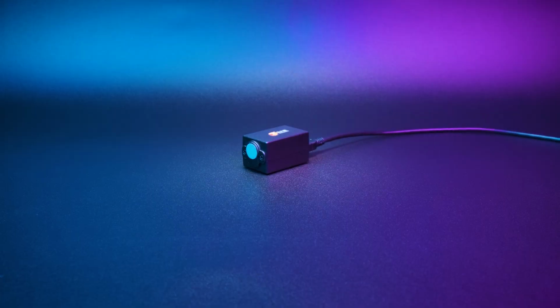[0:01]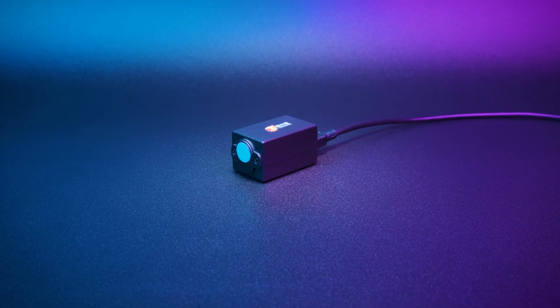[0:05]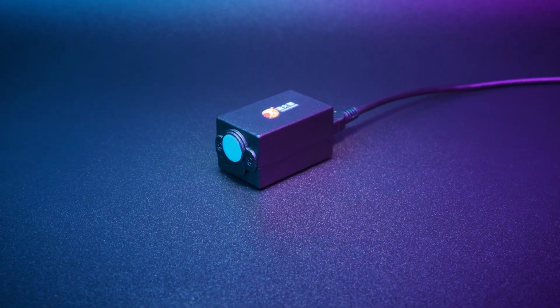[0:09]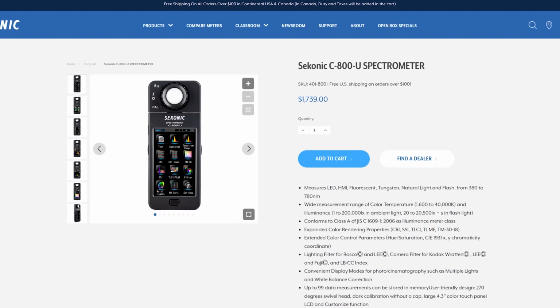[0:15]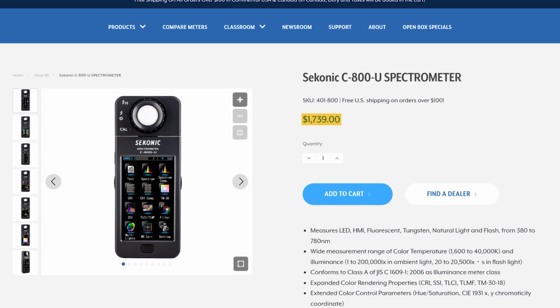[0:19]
Light quality is something we don't often think about, but if you're into lighting design, photography, or setting up an illegal grow room in your basement, then having a spectrometer to accurately measure light can make a huge difference. The only problem is that most spectrometers designed for these tasks cost well over $1,000.
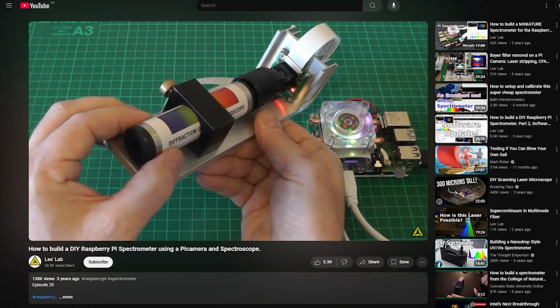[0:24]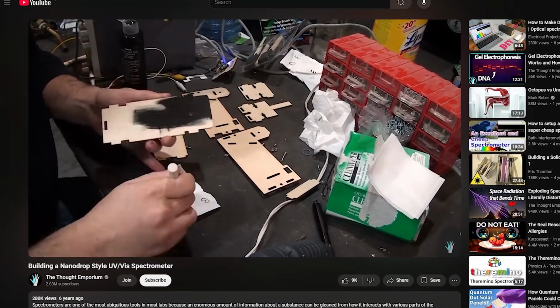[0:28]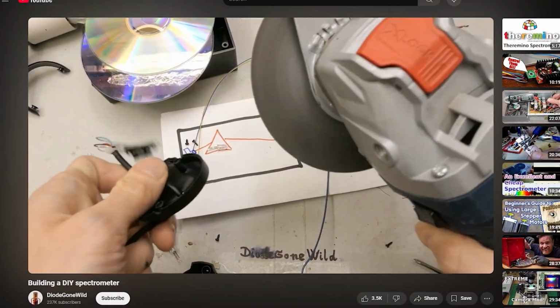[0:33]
Building a webcam-based spectrometer seems like an obvious alternative. They're affordable and can have a resolution of just a few nanometers. But they've got one major drawback that makes them almost useless for my application. They don't provide data in absolute units.
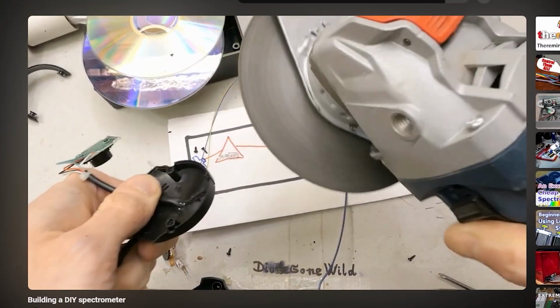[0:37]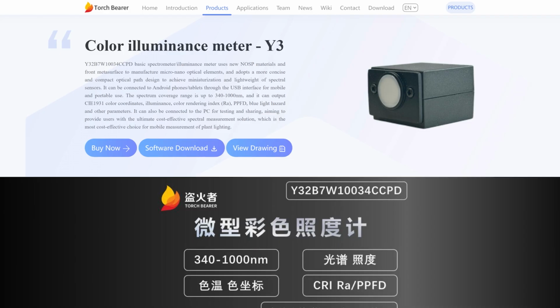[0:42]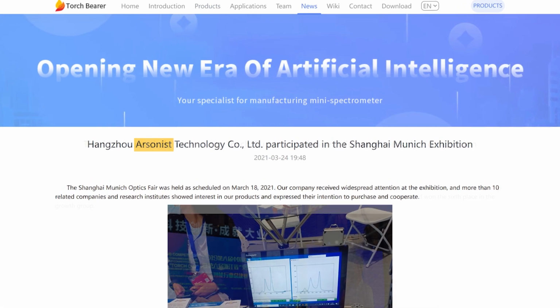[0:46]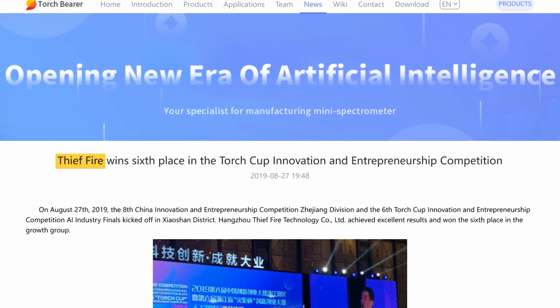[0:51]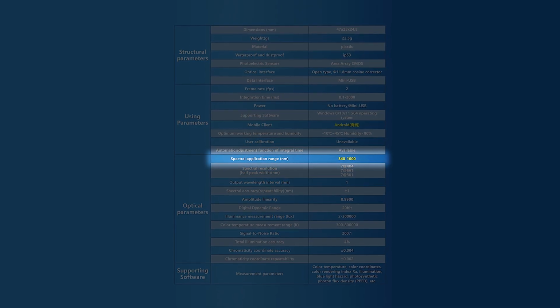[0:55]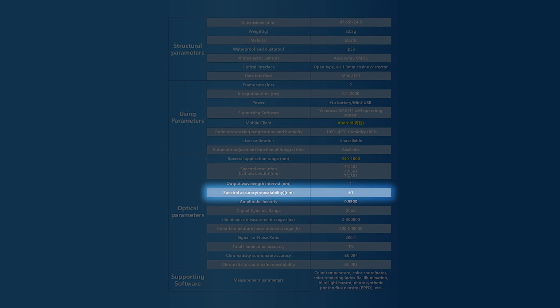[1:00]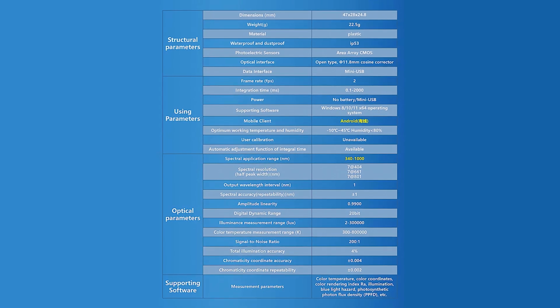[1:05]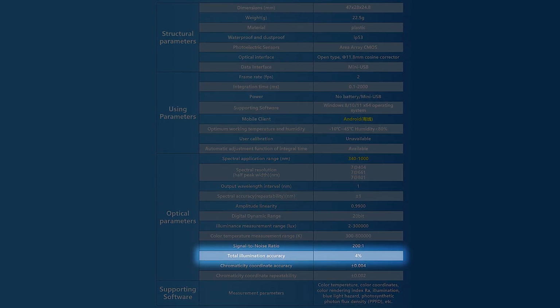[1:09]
That's when I came across a USB spectrometer from a relatively unknown Chinese manufacturer called Torchbearer. Or is it Arsonist? Or maybe Fire Stealer? Their website can't seem to decide. Priced at under $150, it claims a measurement range of 340 to 1000 nanometers, a resolution of 7 nanometers, and an accuracy of 1 nanometer. But most importantly for me, it returns data in absolute units, with an advertised illumination accuracy of just 4%.
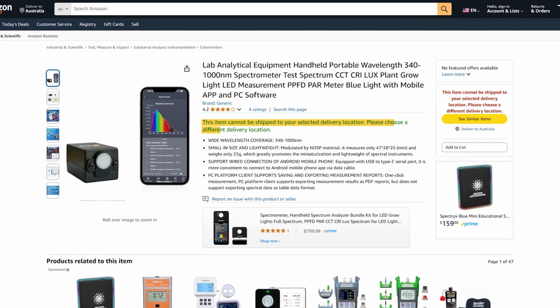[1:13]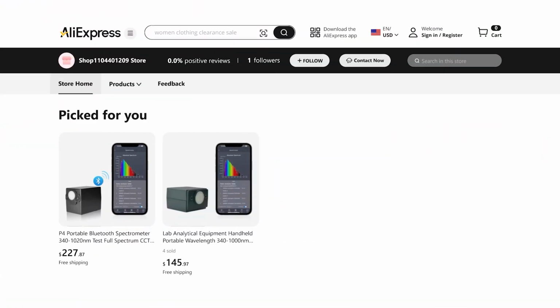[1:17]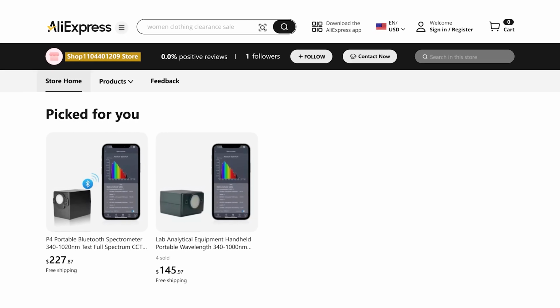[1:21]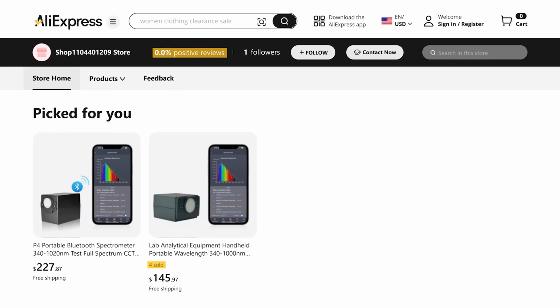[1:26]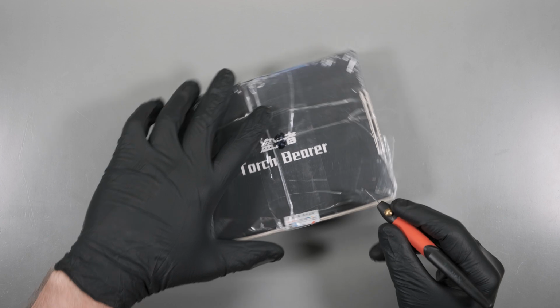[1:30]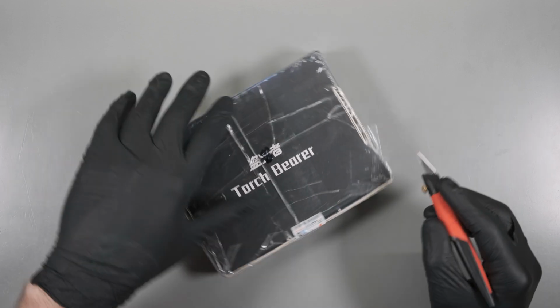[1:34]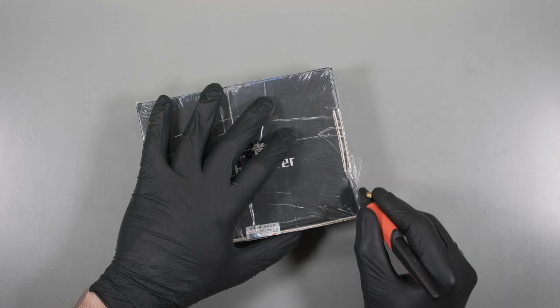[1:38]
It's available on Amazon, but unfortunately, they don't ship to Australia. So I took a chance and ordered from AliExpress, where their store name looks like it was inspired by their Wi-Fi password. With a total of 4 sales and 0% positive feedback, what could possibly go wrong? The seller took almost a week to ship my order, but to my surprise, it arrived via UPS, an unexpected luxury considering AliExpress typically relies on continental drift as their delivery method.
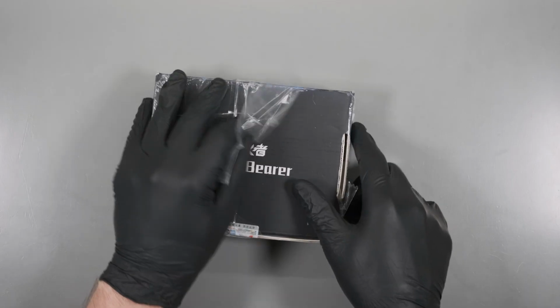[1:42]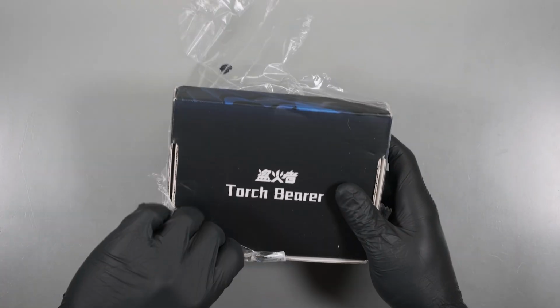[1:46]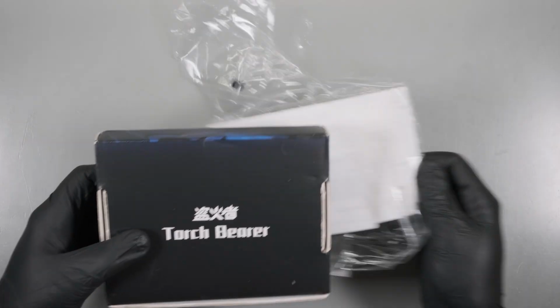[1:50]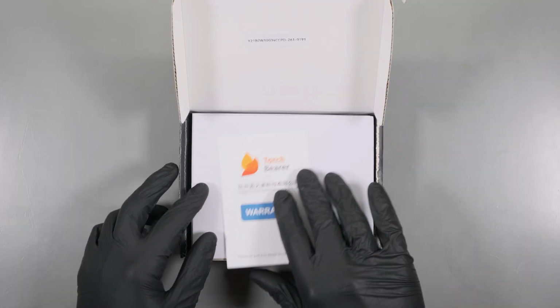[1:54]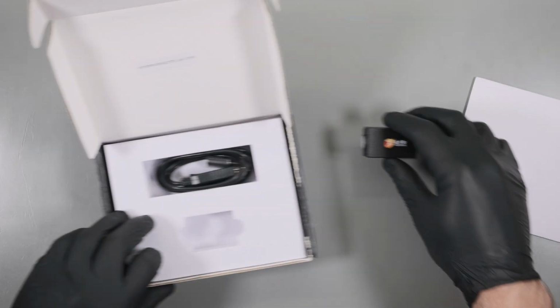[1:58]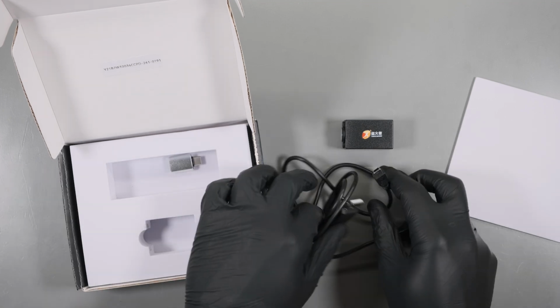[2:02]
The packaging was minimal to say the least, with just a thin layer of shrink wrap surrounding the product box. By some miracle, it arrived without too much damage. Inside the box was a warranty card, the spectrometer itself, a mini USB cable with a suspiciously large connector, and a USB Type-C to A adapter.
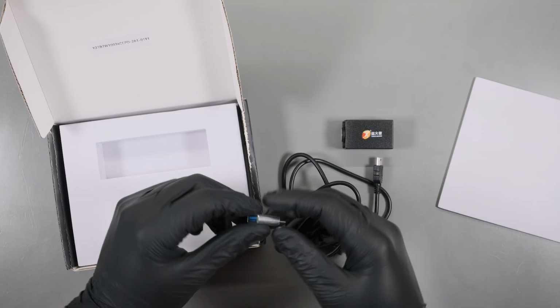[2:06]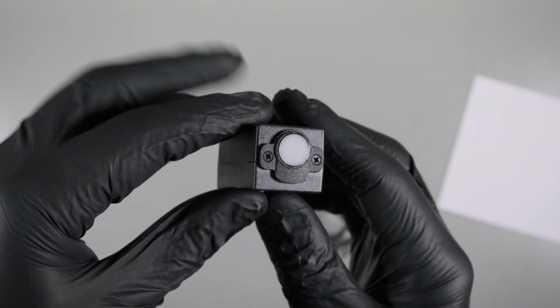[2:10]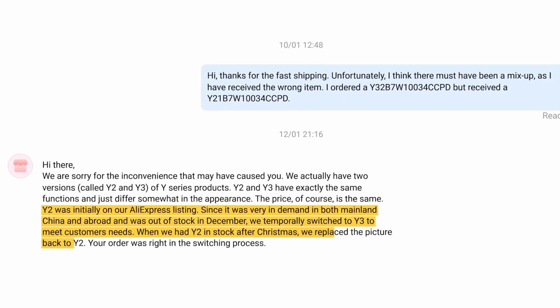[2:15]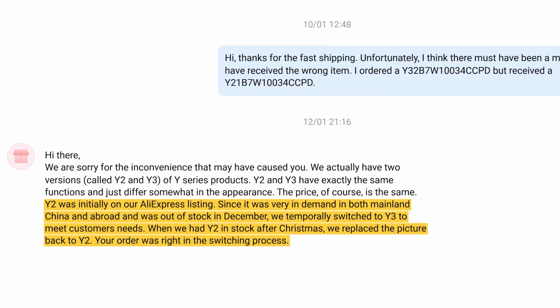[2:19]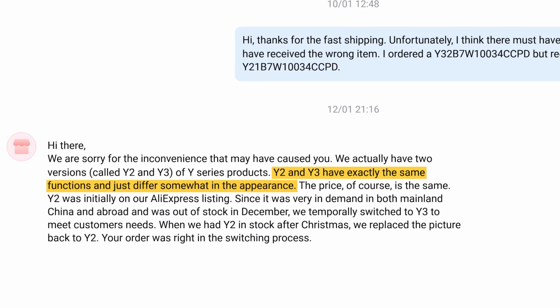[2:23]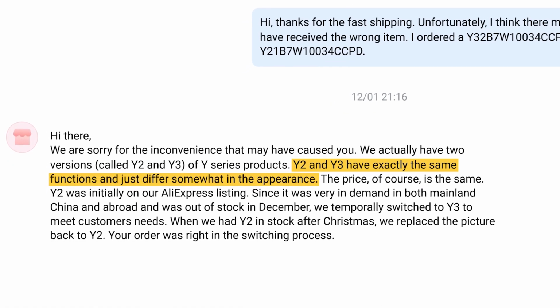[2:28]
There was just one problem. This wasn't the model I ordered. When I reached out to the seller, they explained they'd temporarily stocked another model due to high demand over the holiday season, then stopped responding to my messages. As far as I can tell, the only difference between this and the model I ordered is the size and weight, and both should have identical features.
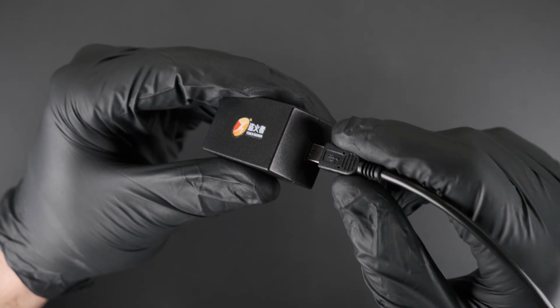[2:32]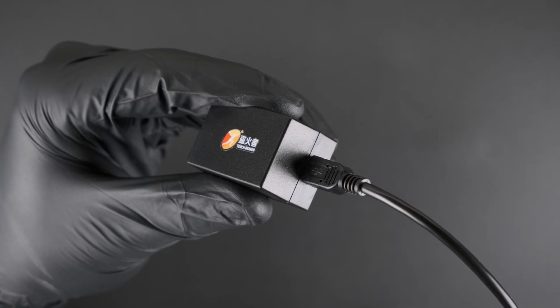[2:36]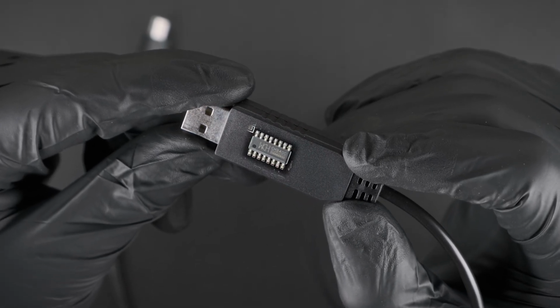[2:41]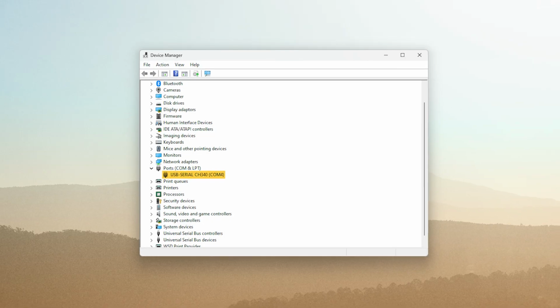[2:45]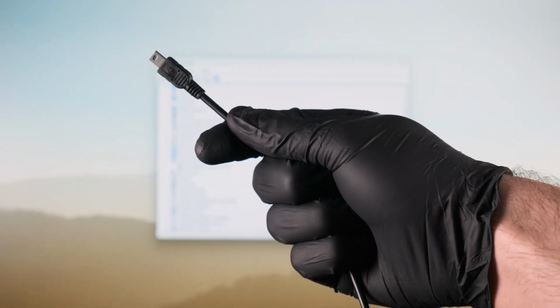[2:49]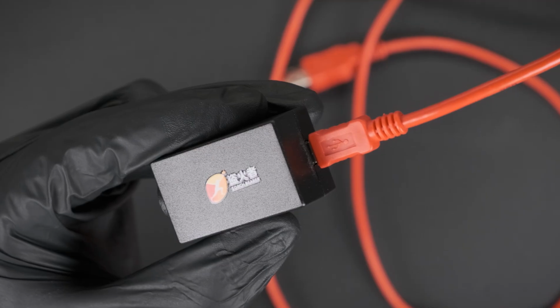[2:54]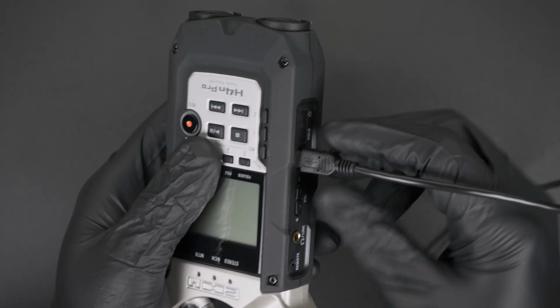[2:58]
The spectrometer is extremely compact and features a mini USB port for communication. Strangely, it doesn't use the USB protocol. Instead, the included cable contains a built-in CH340 USB to serial converter. Plugging the cable into a computer enumerates as a serial port, even without the other end being connected to anything. This means that other cables won't work and could potentially damage the spectrometer. Likewise, the included cable shouldn't be used for any other devices.
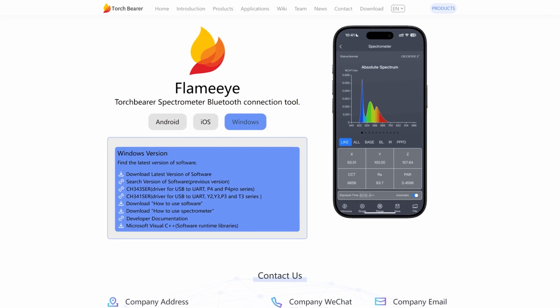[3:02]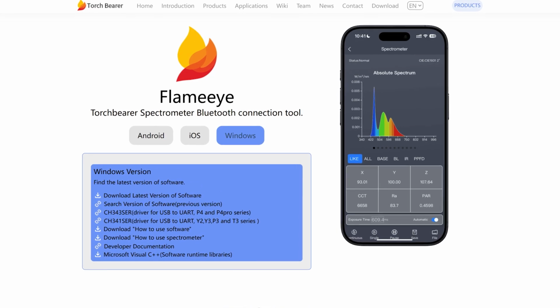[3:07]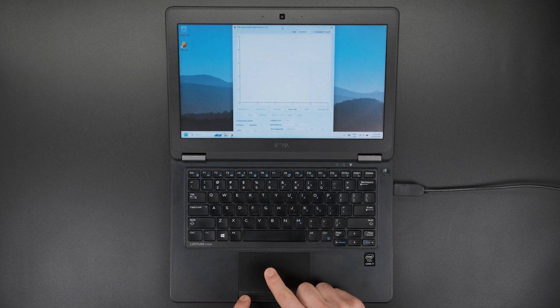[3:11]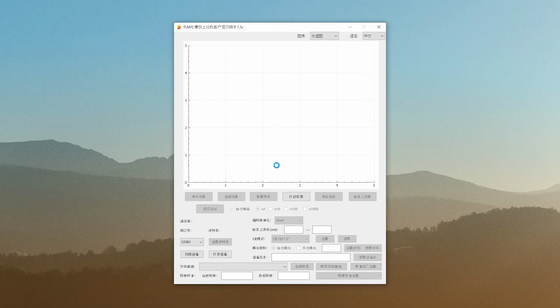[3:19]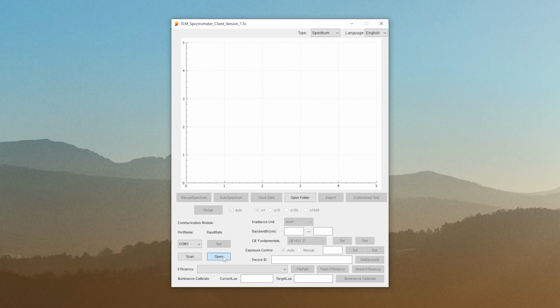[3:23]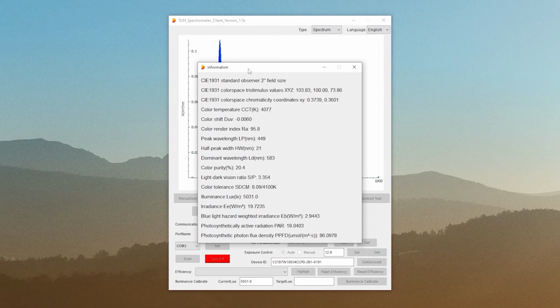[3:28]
The Windows-based software is available on Torchbearer's website, but it comes with some significant limitations. For starters, the window size is fixed, making it completely unusable on devices with small screens. You know, the sort of device that you might want to use a mini spectrometer with. It insists on starting in Chinese, but at least it's easy to switch languages. There isn't a lot of functionality either. Only a basic spectrum view and a handful of parameters are visible.
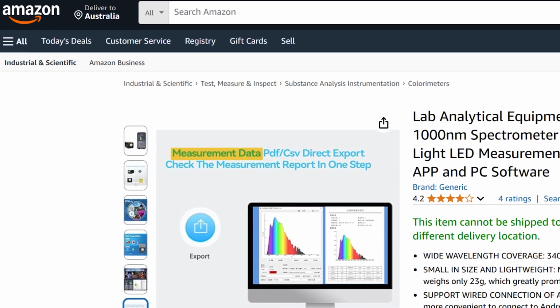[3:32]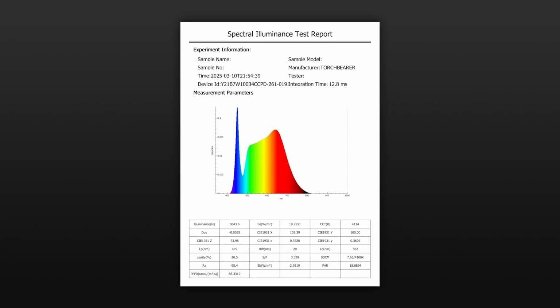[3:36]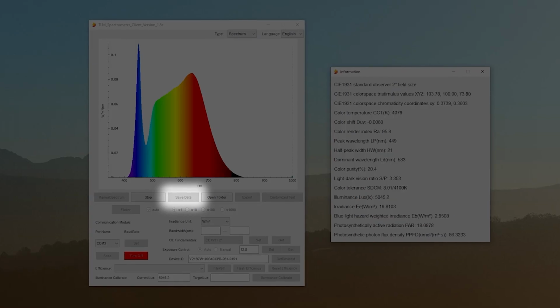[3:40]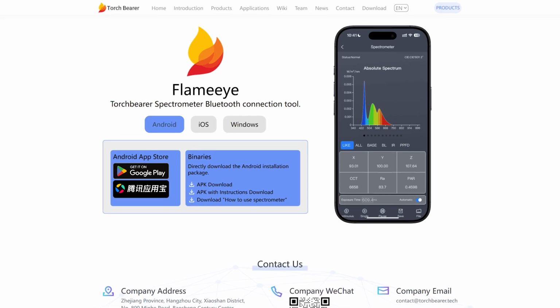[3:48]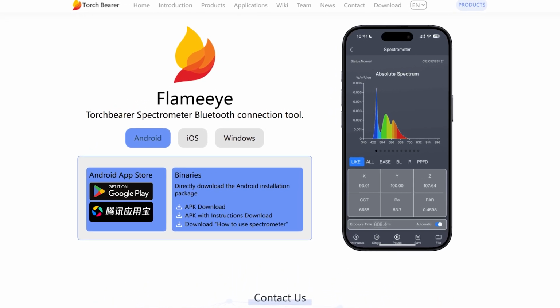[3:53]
Despite advertising CSV exporting on their store page, the only available export format is PDF. Frustratingly, CSV export, along with many other features, do exist within the software, but are disabled for their lower cost spectrometers. The Android app, available on Torchbearer's website and the Google Play Store, suffers from the same limitations.
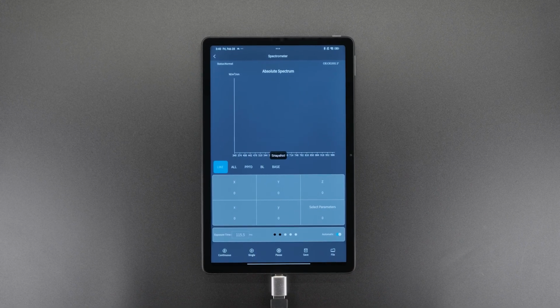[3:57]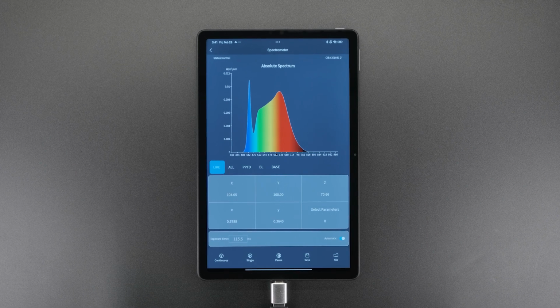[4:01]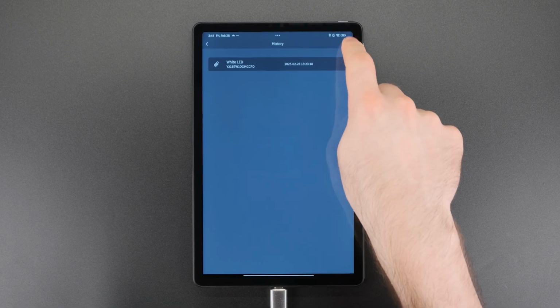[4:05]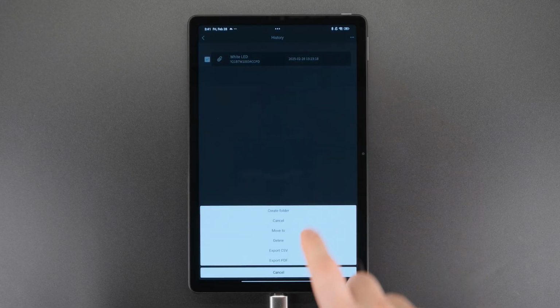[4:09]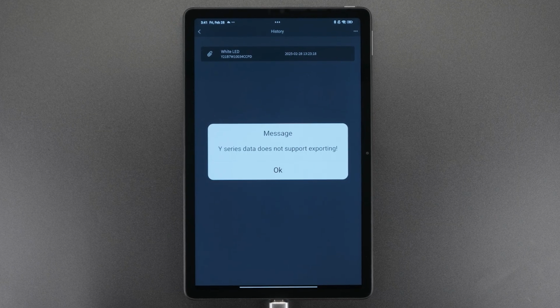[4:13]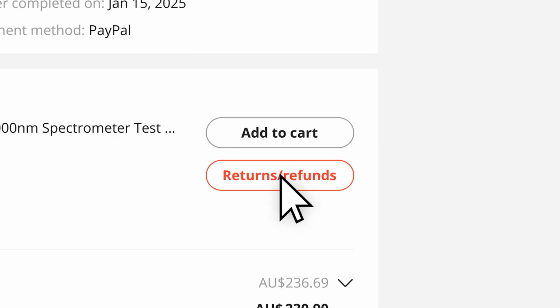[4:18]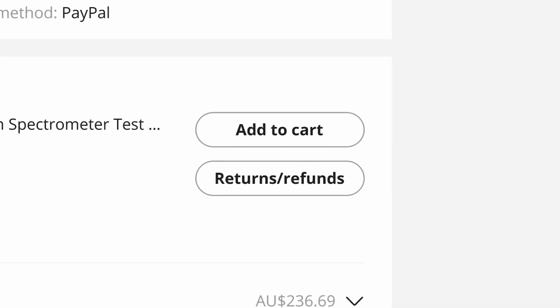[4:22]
Most of the features shown in the marketing images are missing, and like the PC software, the only available visualizations are the spectral distribution and CIE 1931 diagram. Data export is even more limited. This time, not even PDFs can be saved, and attempting to export data results in an error message. I thought about returning it, but where's the fun in that? Instead, let's have a poke around and see if we can unlock some extra functionality.
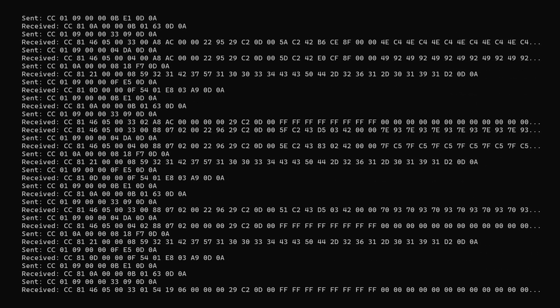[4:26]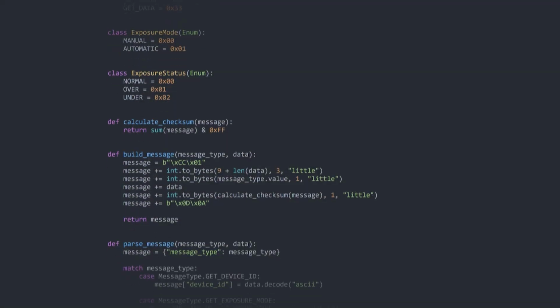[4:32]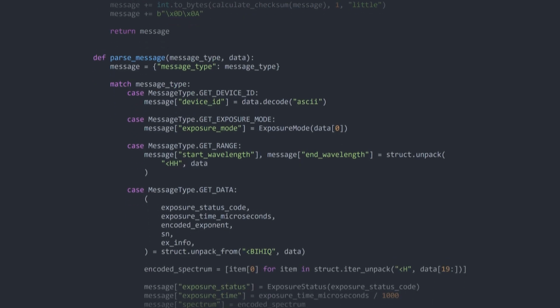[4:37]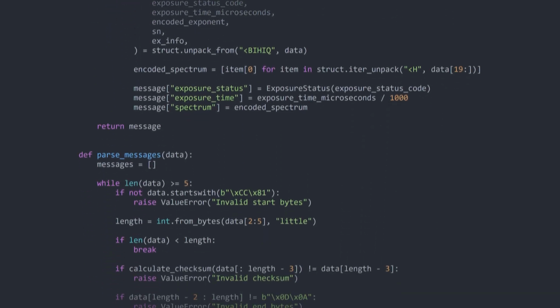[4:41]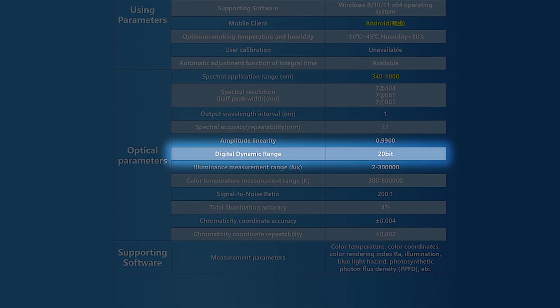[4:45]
The serial protocol seemed like a good place to start. Thankfully, Torchbearer provides protocol documentation for some of their other models. While my model had several differences, it was close enough to put together a simple Python library and extract some data. The data samples are limited to 16 bits, despite the advertised 20-bit dynamic range. Maybe Chinese bits are just more efficient.
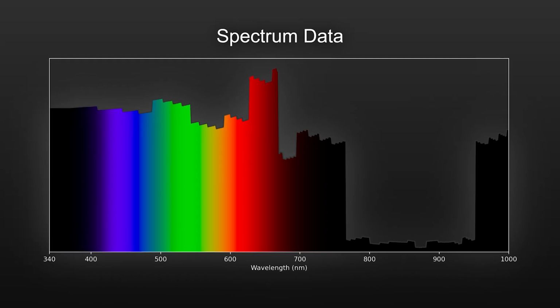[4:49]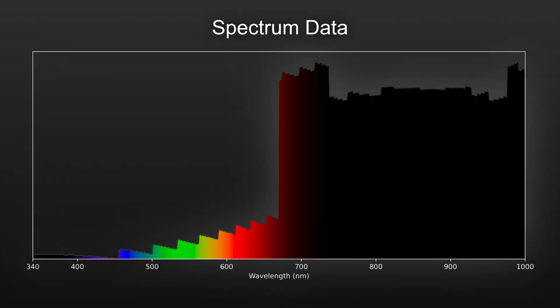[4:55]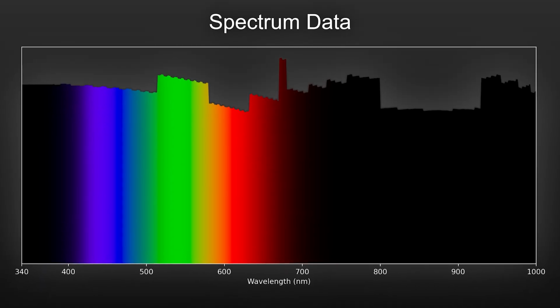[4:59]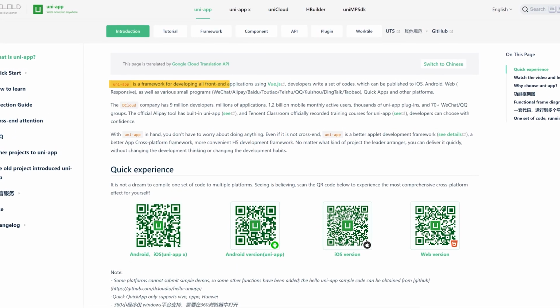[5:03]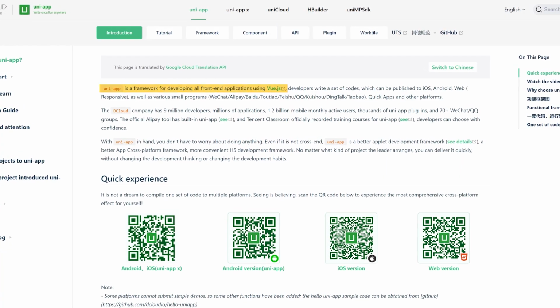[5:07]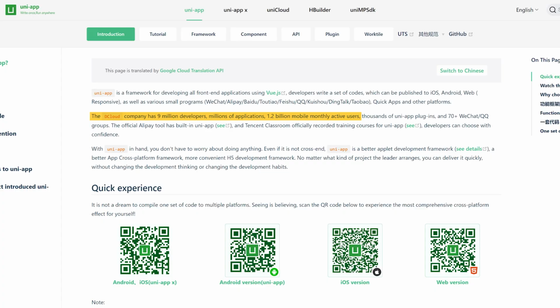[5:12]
Unfortunately, the bad news doesn't stop there, as the spectrum data appears to be encrypted. With no clear way to decrypt the data, the Android app seemed like the next logical place to investigate. The app is built with the Uni-App framework, which allows cross-platform development in JavaScript with a Vue-based user interface. While Uni-App seems to be extremely popular in China, it's virtually unknown outside the country and has almost no English information or documentation.
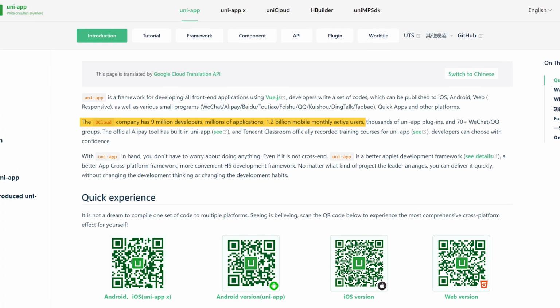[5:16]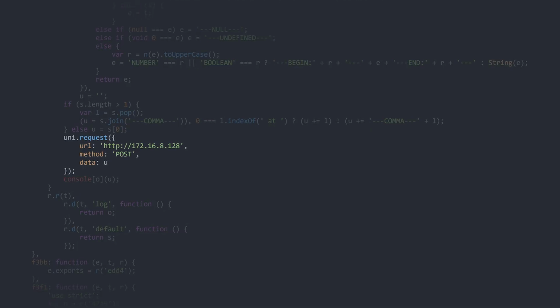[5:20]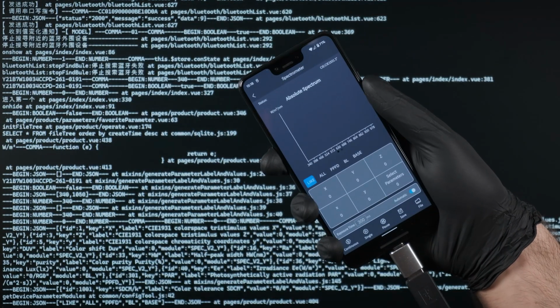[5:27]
I used APK tool to disassemble the app, then modified it to redirect console output to a web server running on my computer. This allows me to view the debug messages and gain some insight into how the app functions.
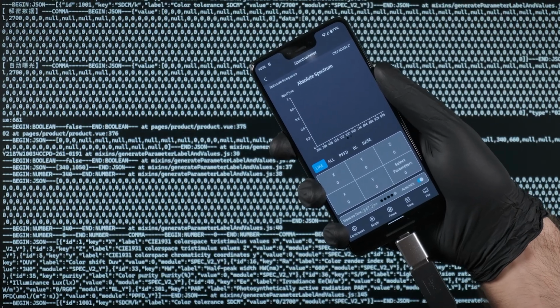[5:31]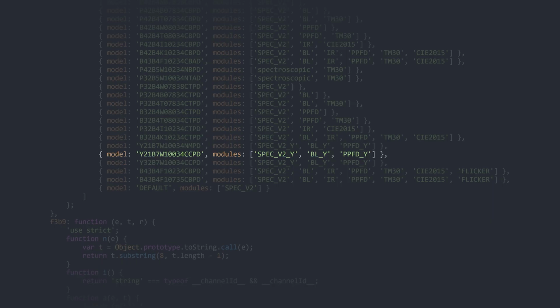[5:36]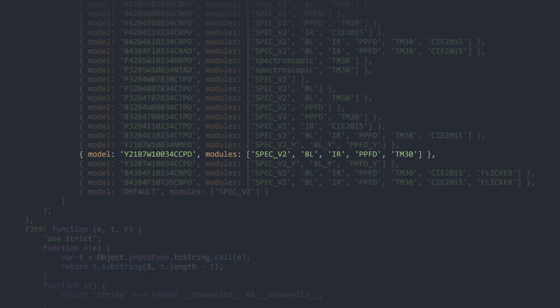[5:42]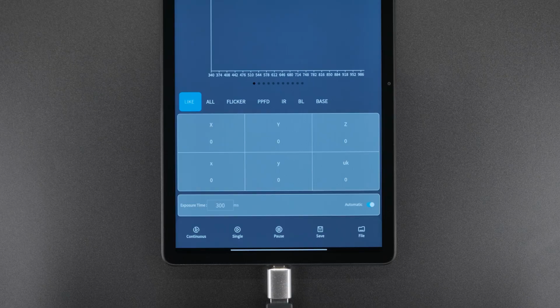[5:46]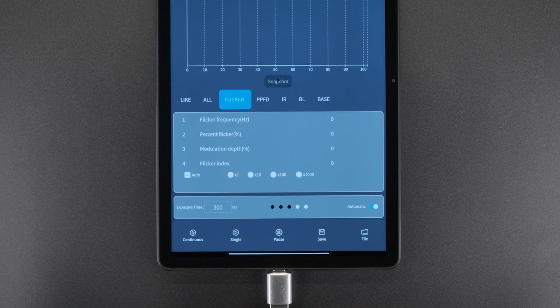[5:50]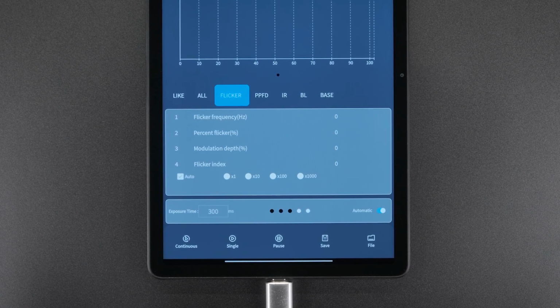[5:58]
When the spectrometer is connected, the model number is used to determine which features should be enabled. We can add features to this list, but we have to be careful, as some features require additional hardware or software to work correctly. For example, flicker detection likely relies on a separate sensor, which is not included in their budget models. Attempting to enable this feature causes the spectrometer to lock up and stop responding to commands.
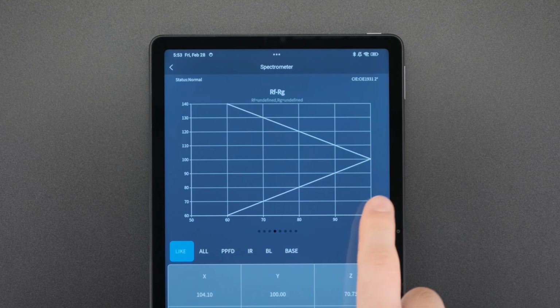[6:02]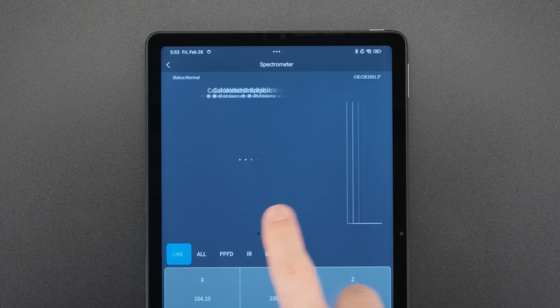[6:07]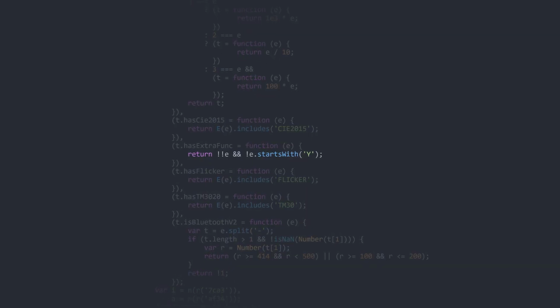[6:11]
Enabling extra features makes them visible in the app, but many don't work correctly, as the app verifies the model number in multiple places. Finding and bypassing these extra checks lets the additional features work as intended.
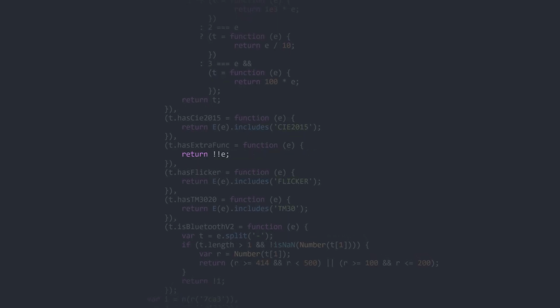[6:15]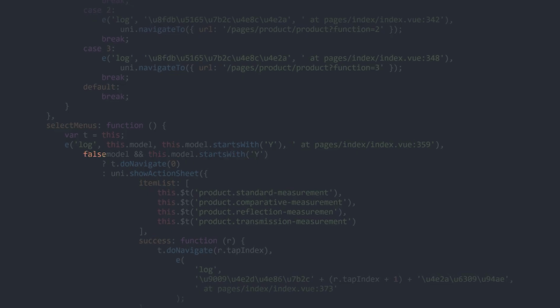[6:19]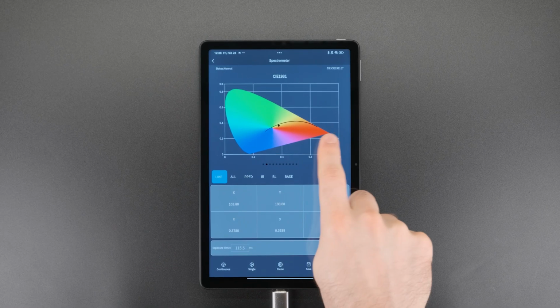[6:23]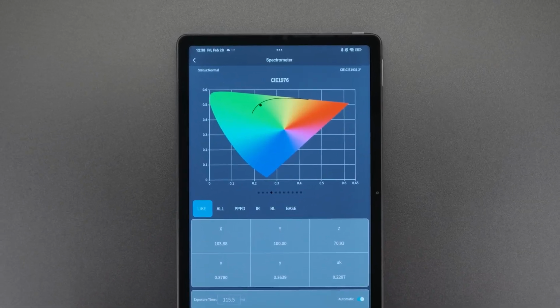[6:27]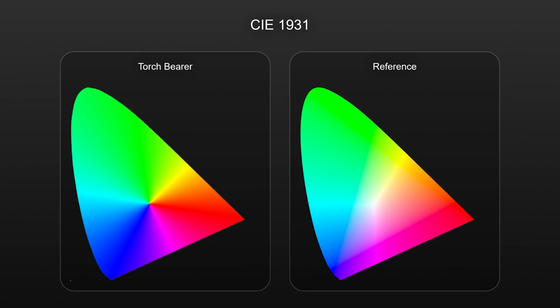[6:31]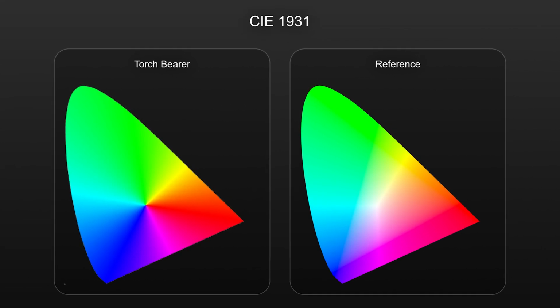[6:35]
Unlocking these features revealed some interesting design choices in the app's colour space diagrams. The CIE 1931 diagram is almost passable, at least the colours are roughly where they should be. The saturation has been cranked up to 11, and there's a strange white dot hanging out in the corner.
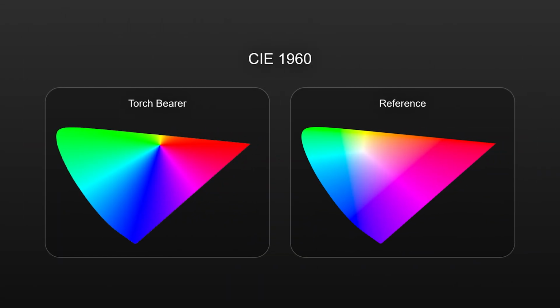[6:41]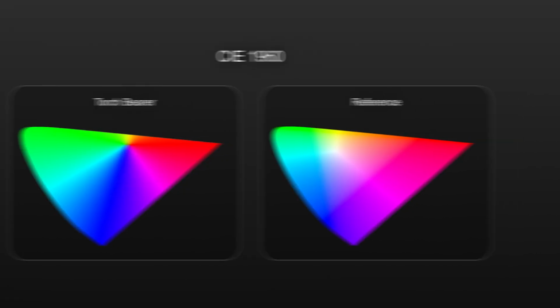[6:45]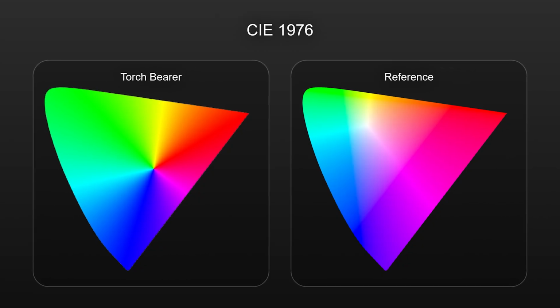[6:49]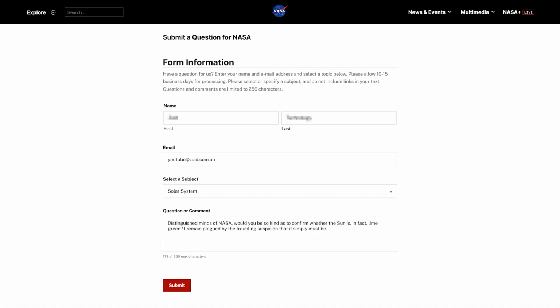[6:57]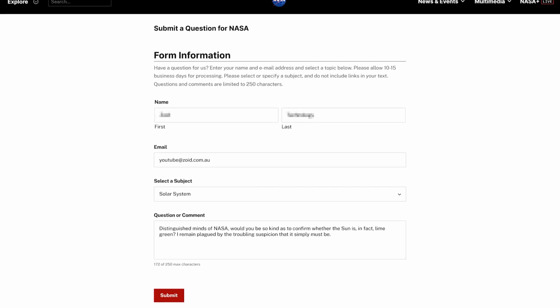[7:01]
The CIE 1960 diagram's white point has gone for a bit of a walk, but that's nothing compared to the CIE 1976 diagram, where the white point is placed in the bottom right instead of the top left, which means, according to this diagram, the sun should appear lime green. I've reached out to NASA for comment, but so far, I haven't got a response.
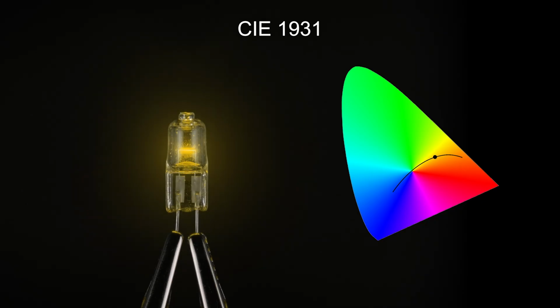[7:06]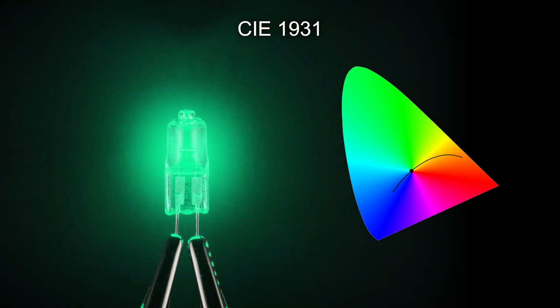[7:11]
If you're curious what dropping acid at a lighting convention would be like, here's a simulation of how an incandescent globe would appear according to these diagrams.
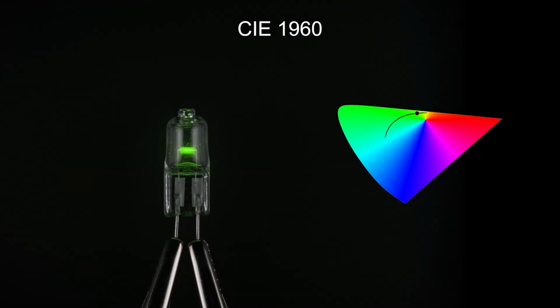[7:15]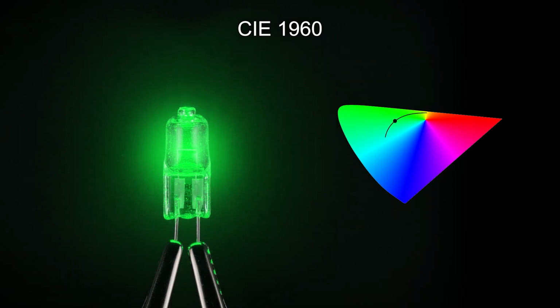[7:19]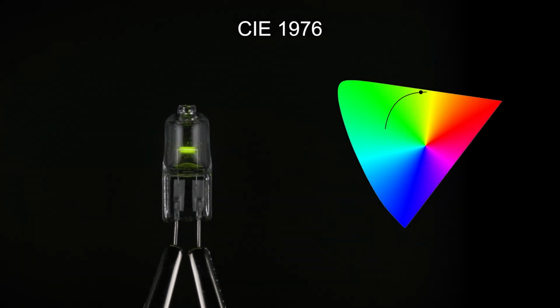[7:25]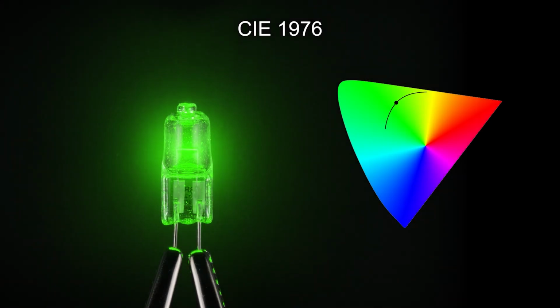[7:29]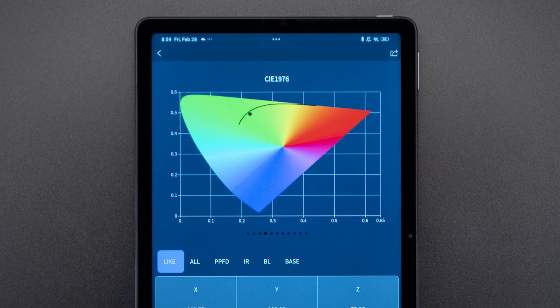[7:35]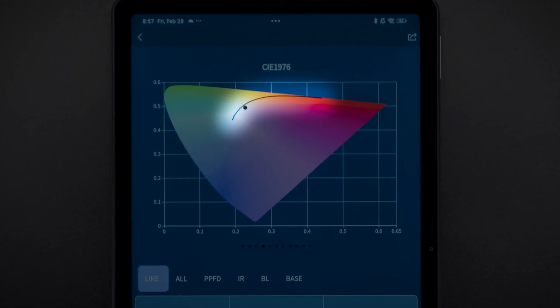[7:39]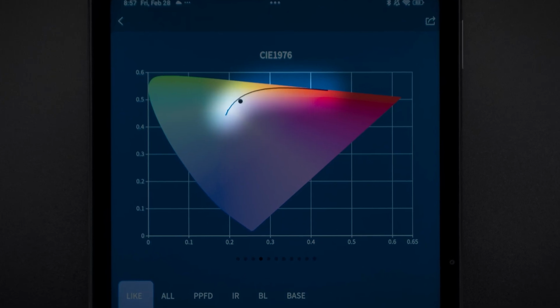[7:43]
I created some new diagrams and added them to the app. The Planckian locus looks like it was drawn by a drunk intern during an earthquake, so I calculated the correct coordinates and included them in the app too.
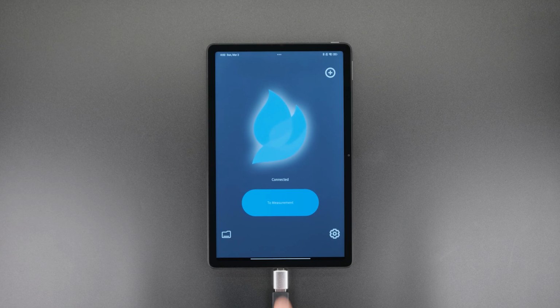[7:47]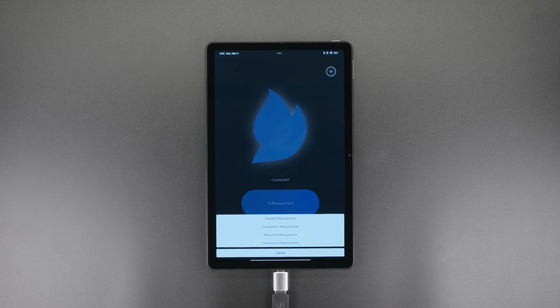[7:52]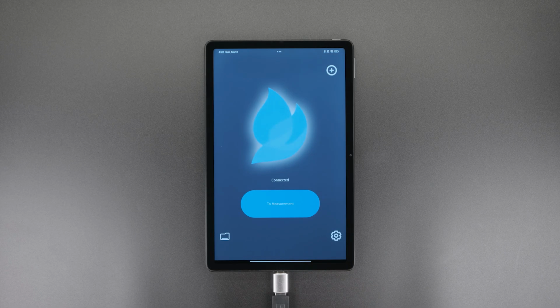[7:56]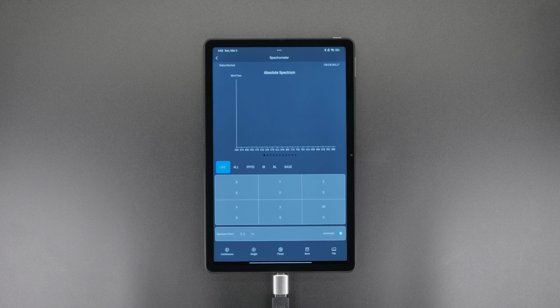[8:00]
With the app improvements complete, 3 additional modes became available: comparative, reflection, and transmission. But I'm going to focus on the standard mode, or we'll be here all week. After selecting a mode, you can choose between single or continuous measurements.
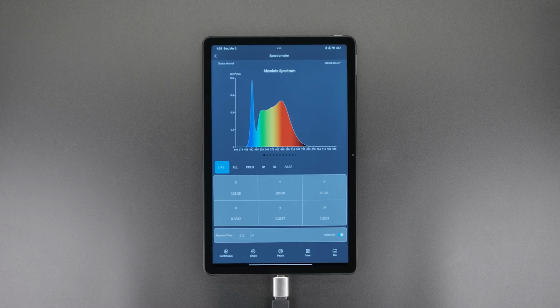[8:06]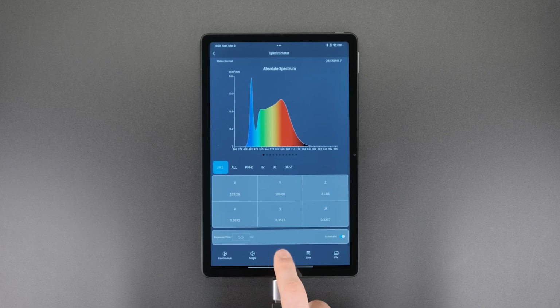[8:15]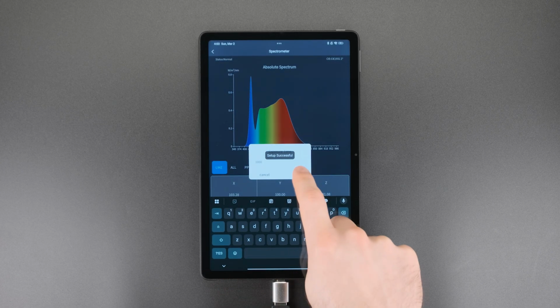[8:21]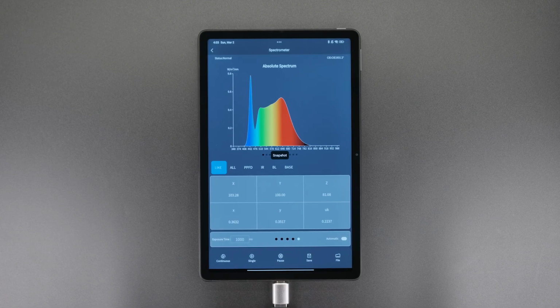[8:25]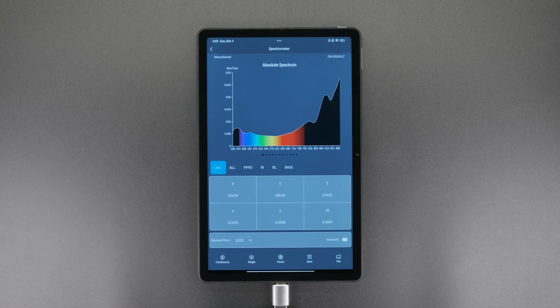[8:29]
Manual exposure is useful for dim or rapidly changing light sources, but it has a significant drawback. There's no clear indication of overexposure. When overexposed, the data doesn't appear obviously clipped and can easily be mistaken for real measurements.
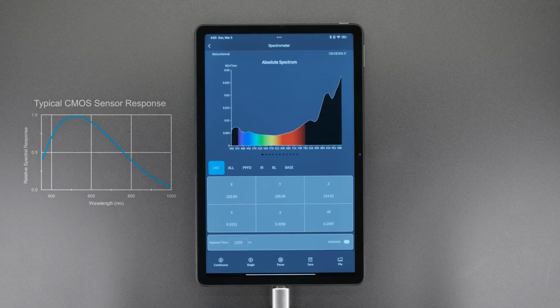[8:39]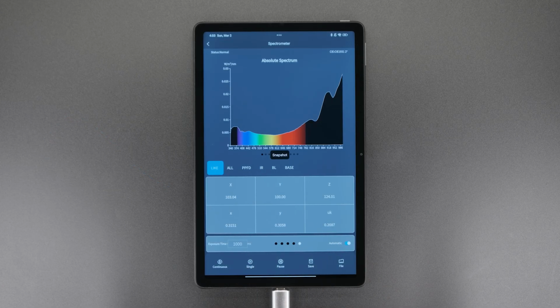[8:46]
Overexposure looks similar to the inverse of a typical CMOS sensor response graph, likely due to how the device applies its calibration data. Thankfully, automatic exposure works well enough in most situations.
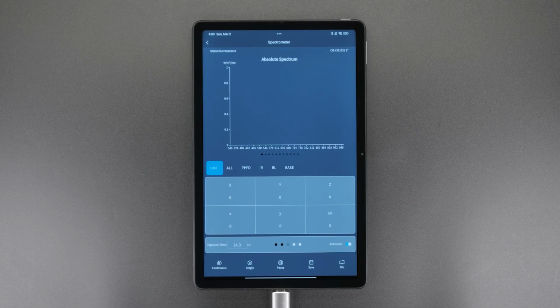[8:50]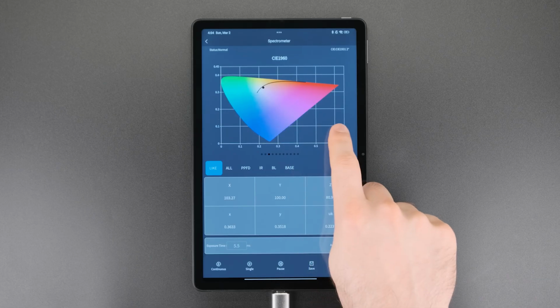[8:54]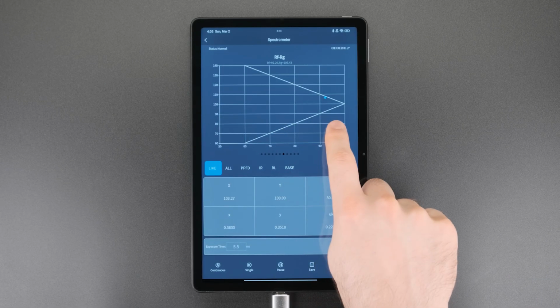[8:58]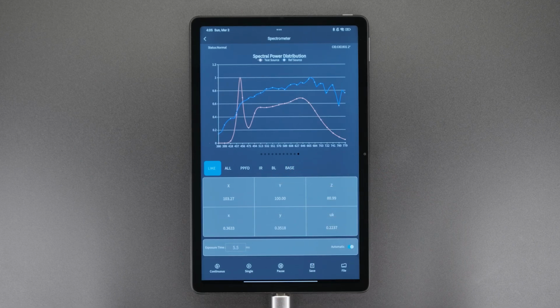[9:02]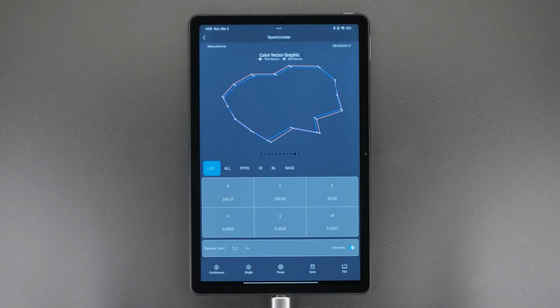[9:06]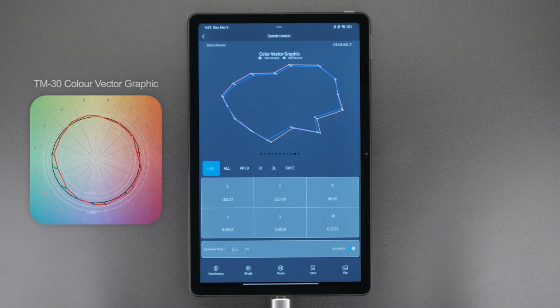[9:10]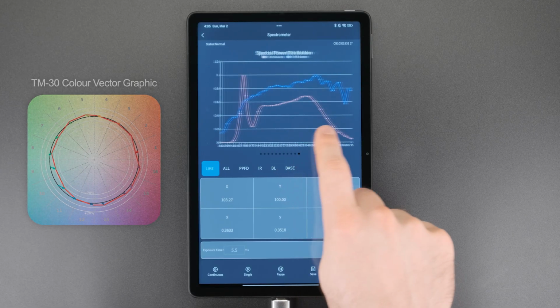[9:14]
Once a measurement has been taken, the spectrum can be viewed directly, or the data can be visualized in a variety of ways, including several CIE color spaces and color quality measurements such as color rendering index and a range of TM30 visualizations. There's also a color vector graphic, which I believe is Torchbearer's interpretation of a TM30 color vector graphic, but it appears that Torchbearer forgot how to draw a circle when designing it.
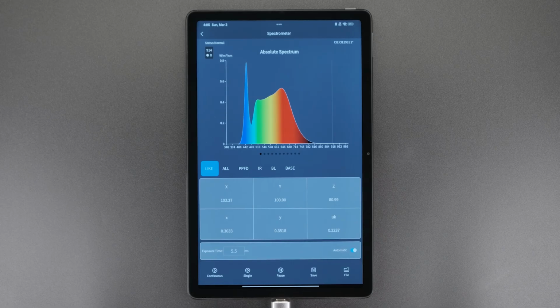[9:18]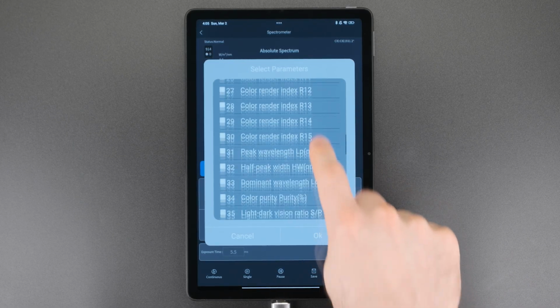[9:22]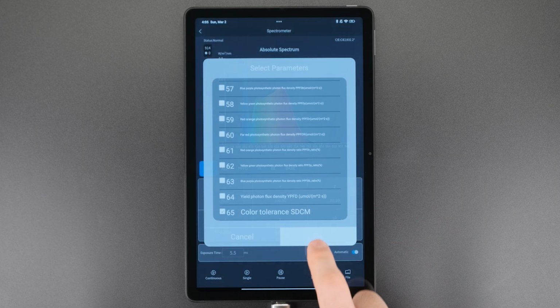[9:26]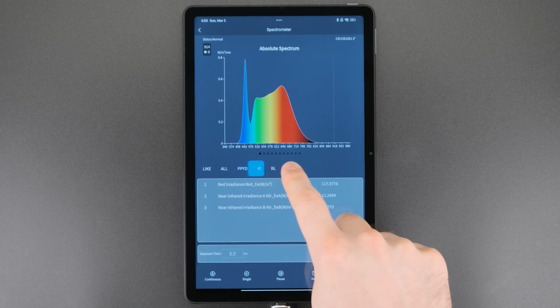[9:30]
Various calculated parameters are displayed in the lower section. The Like tab allows you to select 6 parameters to be displayed together, while the other tabs contain lists of parameters that are grouped by category. There's over 60 parameters, and honestly, I have no idea what most of them do.
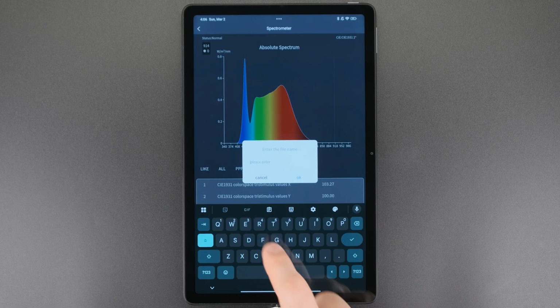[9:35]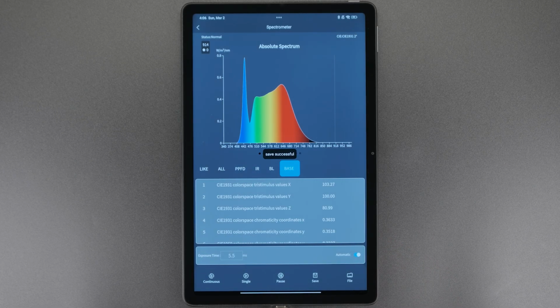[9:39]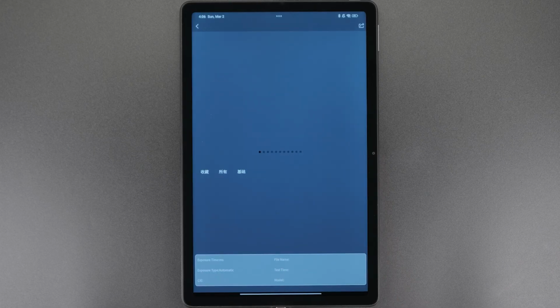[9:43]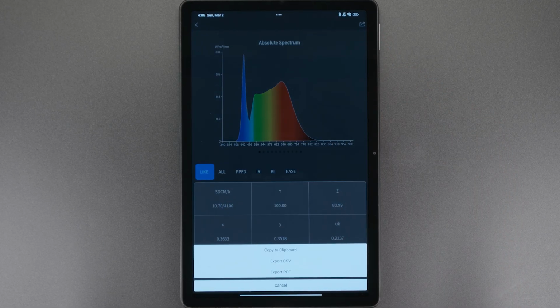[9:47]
To export data, you first have to save a measurement. Once saved, you can tap the Share button to export as a CSV, PDF, or copy it to the clipboard.
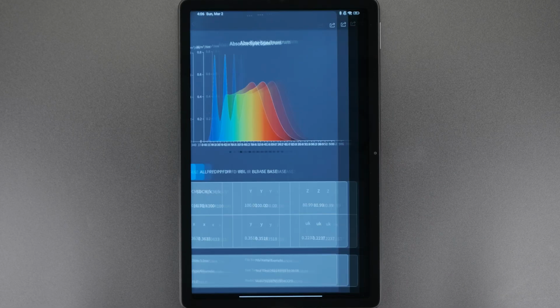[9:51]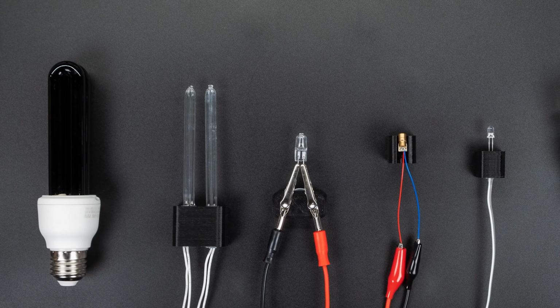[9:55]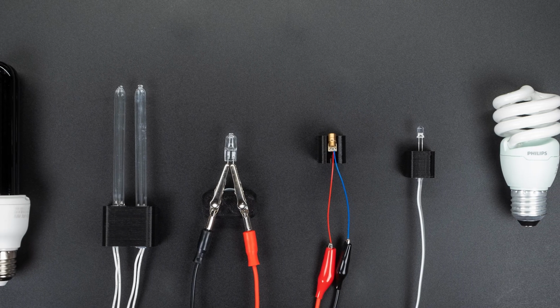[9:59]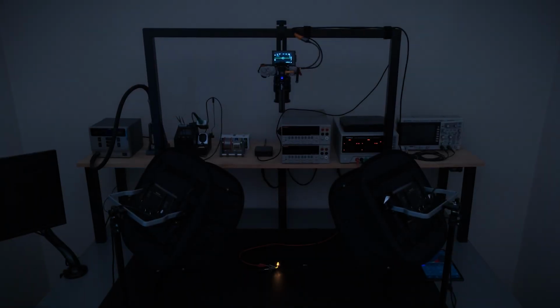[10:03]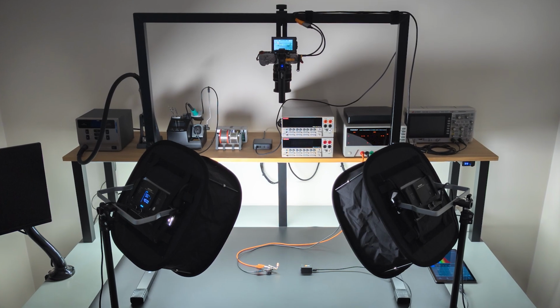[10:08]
Now, let's see how the spectrometer performs under various conditions. I'll also try to verify some of its advertised specifications. I've used external lighting for most of these tests because, as it turns out, you need light to see things. In those cases, I capture the measurements separately to make sure they're not affected.
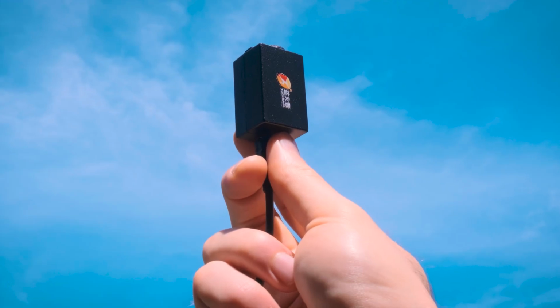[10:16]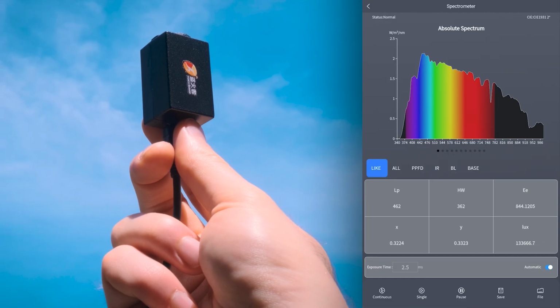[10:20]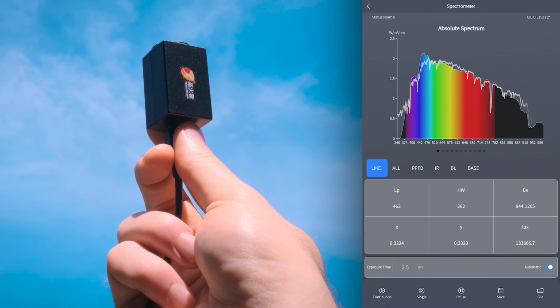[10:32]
When measuring sunlight, the spectrometer can detect many of the Fraunhofer lines, which are caused by gases in the Sun and Earth's atmosphere absorbing certain wavelengths. The measured spectrum closely matches published solar measurements, except in the ultraviolet range, where the intensity drops off at around 360 nanometers, suggesting the spectrometer might not reach as far into the ultraviolet as advertised.
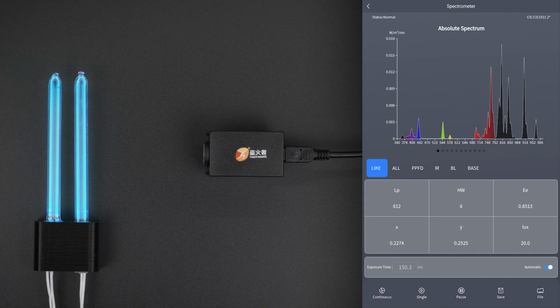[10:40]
These flesh-burning death lamps are germicidal mercury vapor tubes that primarily emit in the UVC region, well below what this spectrometer can measure. The little cancer tubes are made from fused silica, as regular glass blocks most ultraviolet wavelengths.
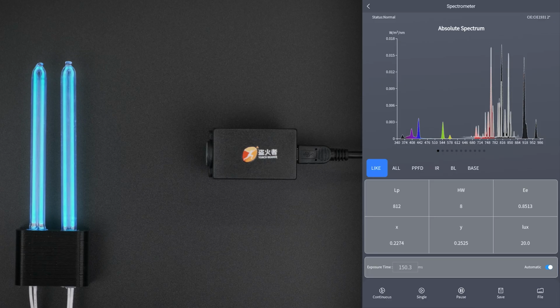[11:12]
While we can't see Mercury's UVC emissions, its UVA and visible peaks are easily measured, and all within 1 nanometer of their published values. There are also a significant number of peaks in the infrared region, which don't correspond to any of Mercury's emissions. These closely resemble the spectral lines of argon, which is often included to help start the tube.
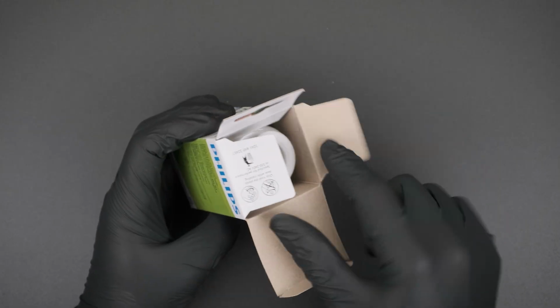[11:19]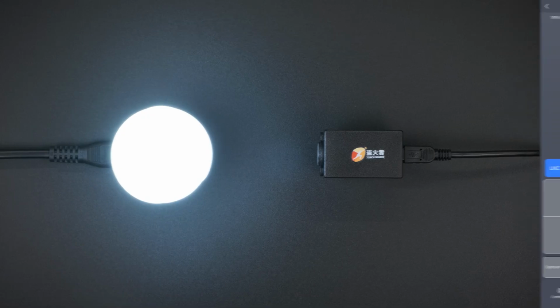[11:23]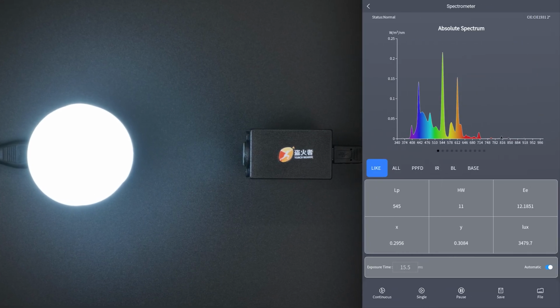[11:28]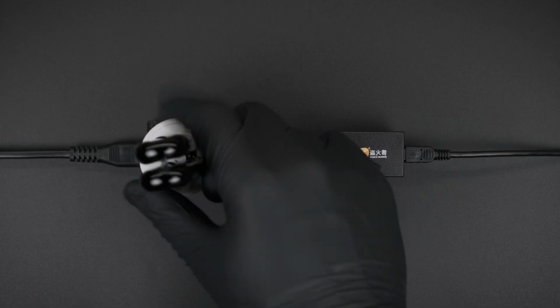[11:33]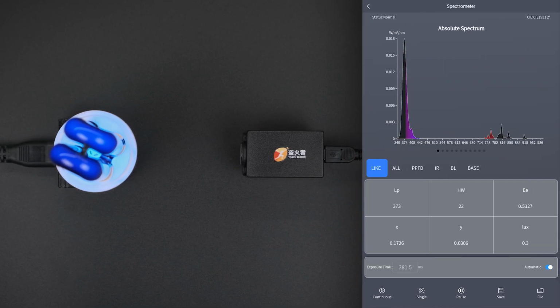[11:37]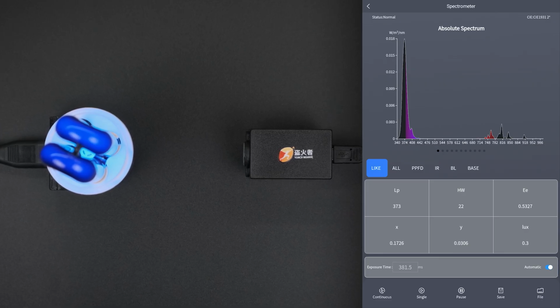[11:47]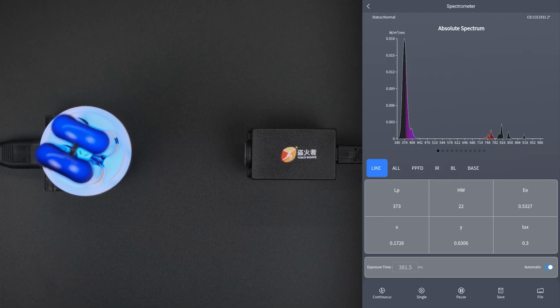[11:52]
Fluorescent lamps are another type of mercury vapor tube, but include a phosphor to convert the UV emissions into visible light. As expected, Mercury's UVA peak is absent, while its other emission lines are clearly visible. This black light is similar to a regular compact fluorescent lamp, but instead of a visible phosphor, it has a phosphor that emits in the UVA region. It's built from Wood's glass, which blocks most visible light, allowing only ultraviolet and infrared to pass through. Once again, we can see some of argon's spectral lines in the infrared region.
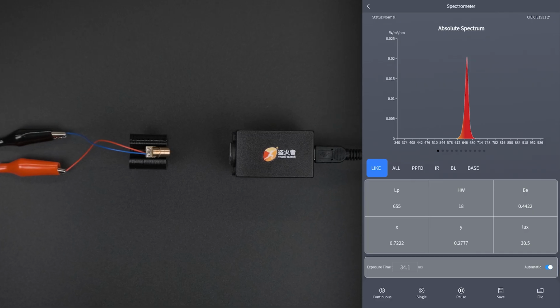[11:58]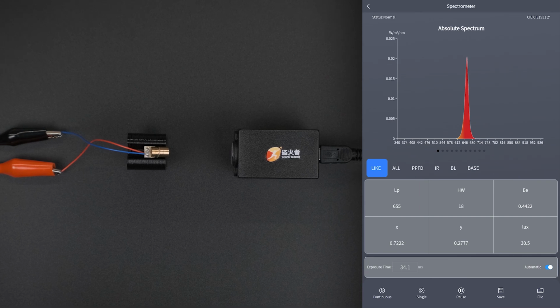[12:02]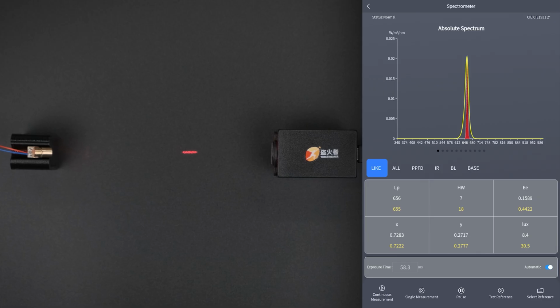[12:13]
This 650 nanometer red laser diode is currently operating just below its threshold current, behaving like an LED with a spectral width of 18 nanometers. Increasing the current to above its lasing threshold dramatically increases the output, so I'm bouncing it off a matte surface to limit the amount of light reaching the spectrometer. The spectral width has narrowed to 7 nanometers, showing that the spectrometer's resolution at this wavelength meets or exceeds its specifications. This is a great use of the app's comparative mode.
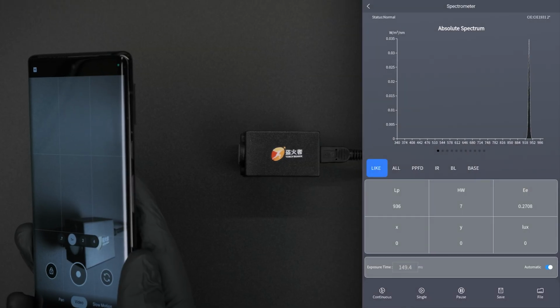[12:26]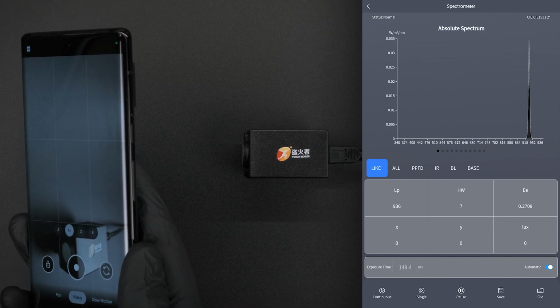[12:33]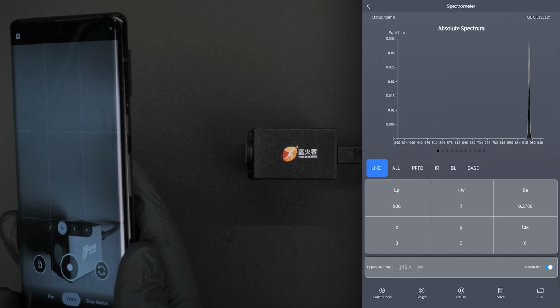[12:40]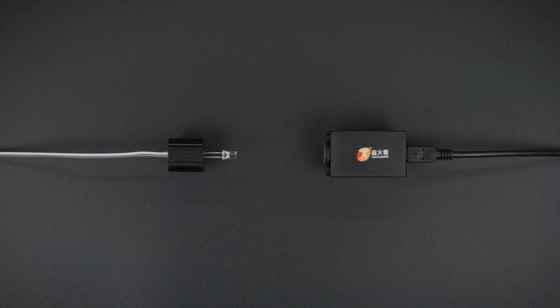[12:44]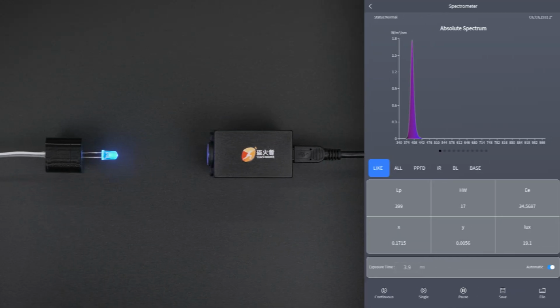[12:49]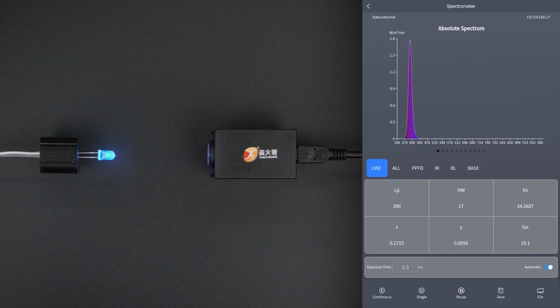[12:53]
I noticed an unexpected infrared peak at 936 nanometers while recording video with my phone. It turns out the spectrometer was detecting my phone's autofocus laser. Like the red laser, it has a spectral width of 7 nanometers. LEDs are relatively monochromatic and typically have a spectral width of around 20 nanometers. This UV LED emits at 399 nanometers. Despite being in the ultraviolet region, this wavelength is still easily visible to the human eye.
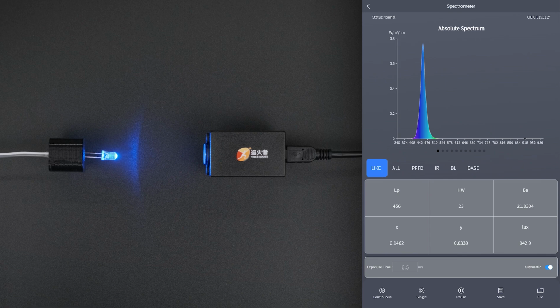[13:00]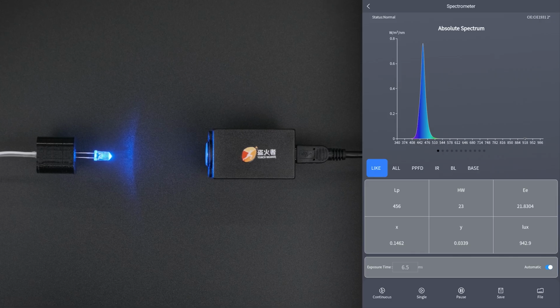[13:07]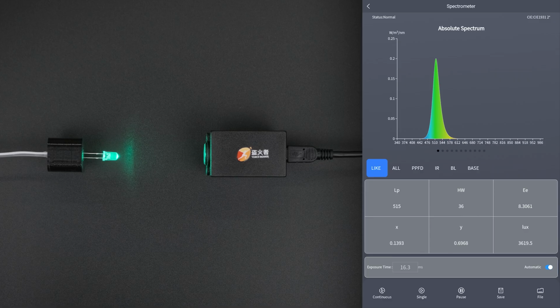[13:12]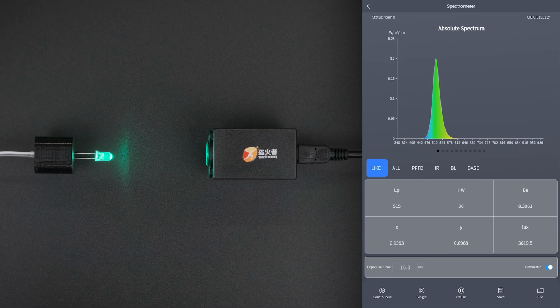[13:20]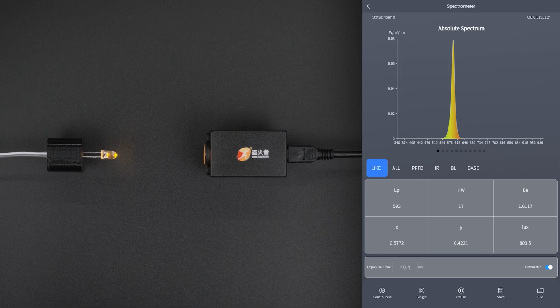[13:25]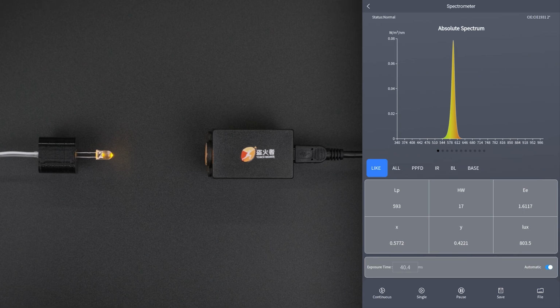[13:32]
Next up, we've got a 456 nanometer blue LED. While it emits a significant amount of light, it appears quite dim due to the eye's low sensitivity at this wavelength. This 515 nanometer green LED outputs less than half the power of the blue LED, but it appears significantly brighter due to the eye's much higher response to green wavelengths. Now, this 593 nanometer LED was advertised as yellow, but to my eye, it looks closer to orange.
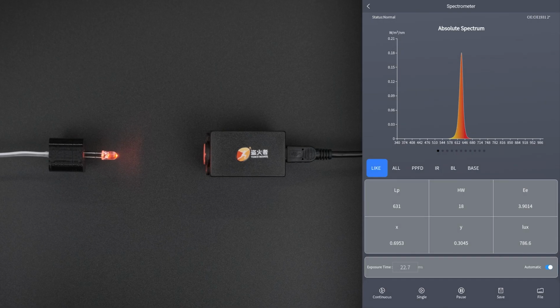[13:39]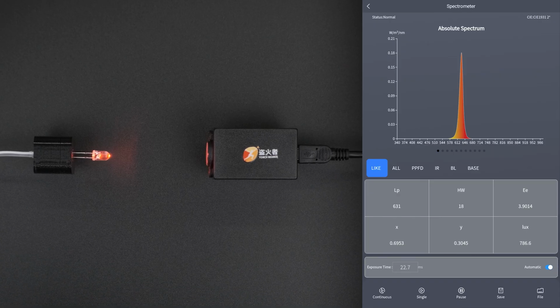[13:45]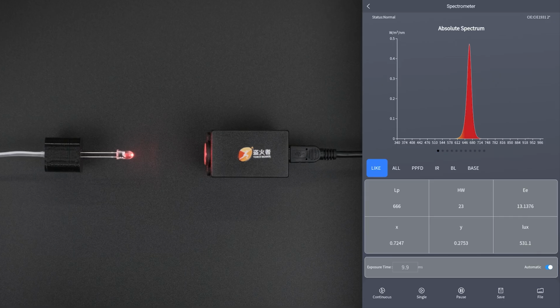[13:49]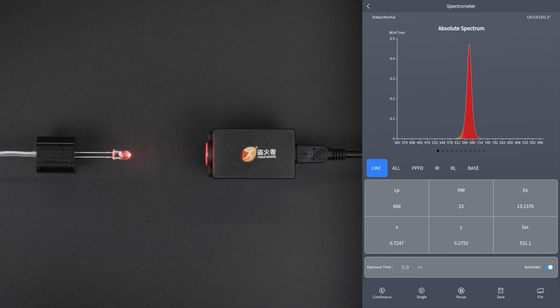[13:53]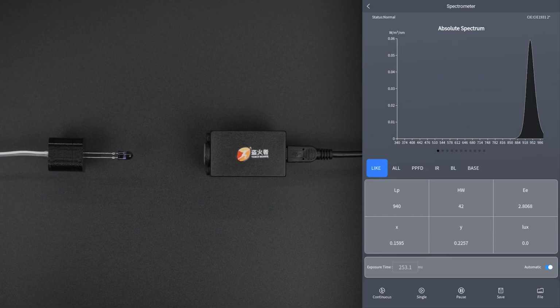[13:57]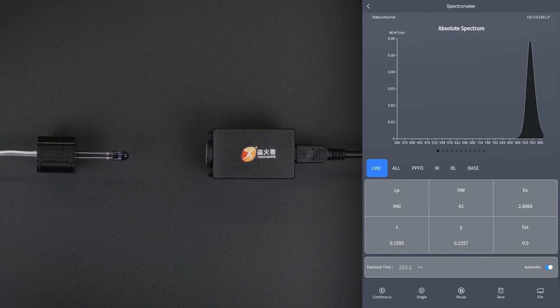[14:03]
Like most yellow LEDs, it's horribly inefficient, producing less than a tenth of the blue LED's output while consuming a similar input power. A 631 nanometer red LED looks quite red on camera, but in person, it's more of a deep orange. Here's a devilish 666 nanometer LED, which looks similar to the previous LED on camera, but is significantly more saturated in person. Invisible both to the human eye and the camera, but clearly detectable by the spectrometer, this 940 nanometer infrared LED is commonly used in remote controls.
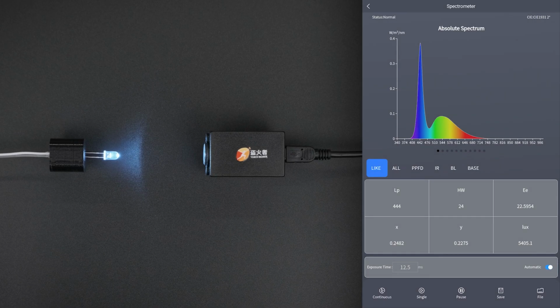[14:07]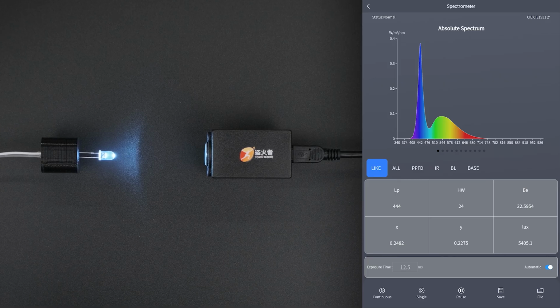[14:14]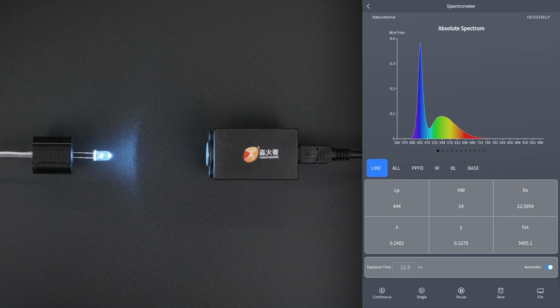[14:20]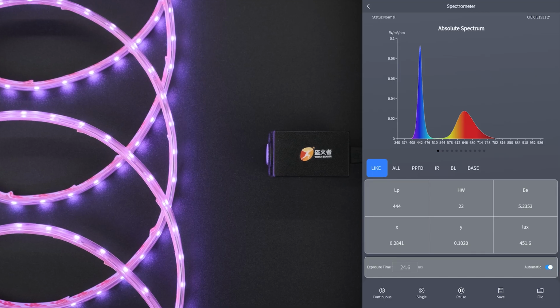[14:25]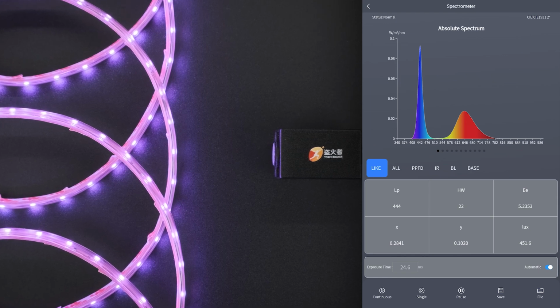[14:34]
Up next is a cheap and nasty white LED, which consists of a blue diode coated with a yellow phosphor. Like a lot of cheap white LEDs, the blue output is significantly stronger than the phosphor, resulting in a very cool output color. There are two common ways of producing purple light with LEDs. One approach is to use both red and blue diodes in combination, which is how RGB LEDs create purple. The other method is used in this LED strip, where a blue diode is coated with a red phosphor.
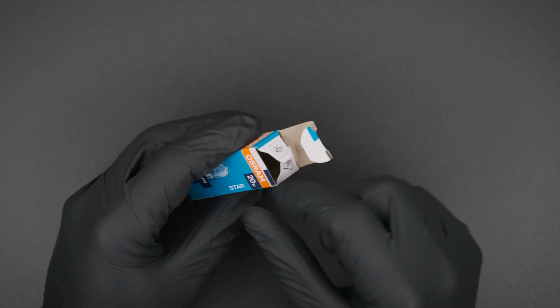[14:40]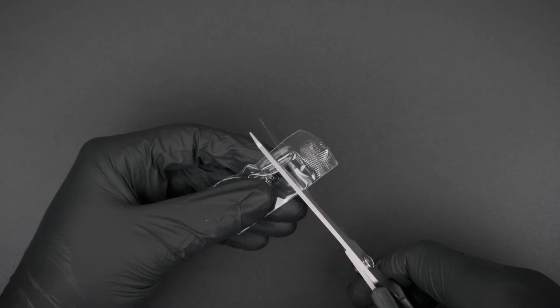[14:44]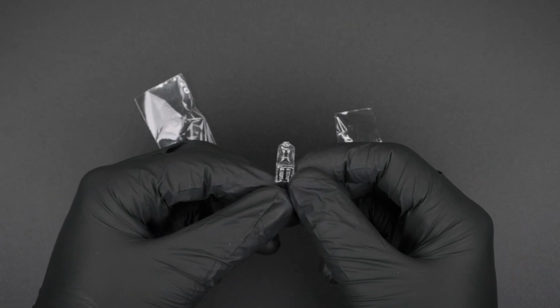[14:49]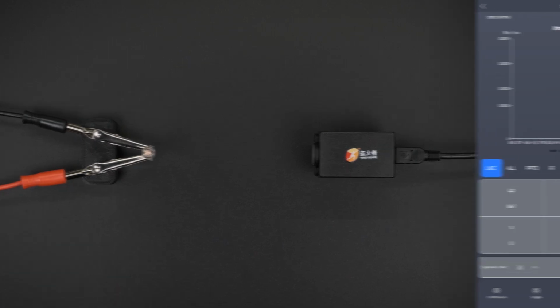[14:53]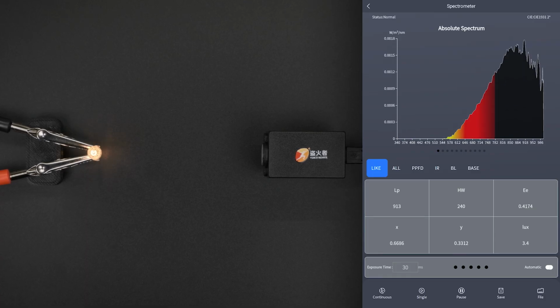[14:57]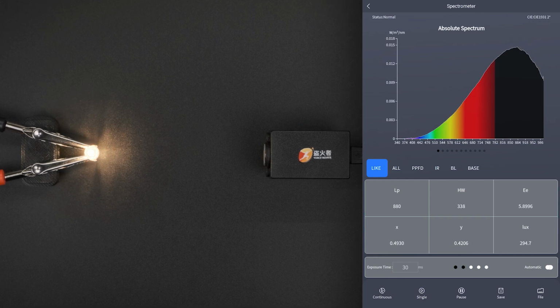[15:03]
I'm using a 12-volt halogen bulb as a black body source. This bulb advertises a UV filter, which might affect the measurements. I'm increasing the voltage in 1 volt increments every 2 seconds, up to a maximum of 20 volts. I've used the manual exposure mode on the spectrometer, as auto exposure struggles with the rapidly changing brightness. This caused some visible noise at lower brightness levels.
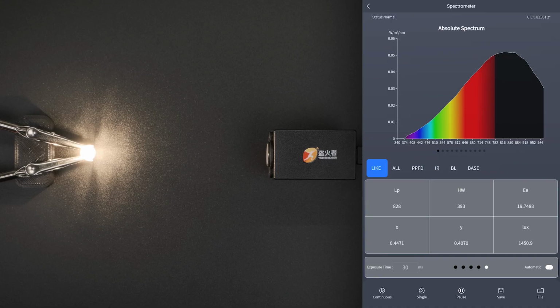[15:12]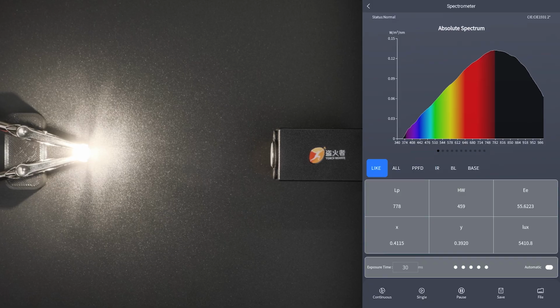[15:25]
Similar to the sunlight measurements, the UV drops off below about 360 nanometers, though it's not clear if this is caused by the spectrometer or by the bulb's UV filter. While I haven't been able to verify all the spectrometer specifications, the measurements I took closely match the expected values, with the notable exception of UV wavelengths below around 360 nanometers.
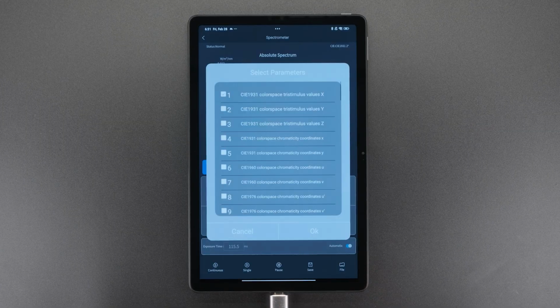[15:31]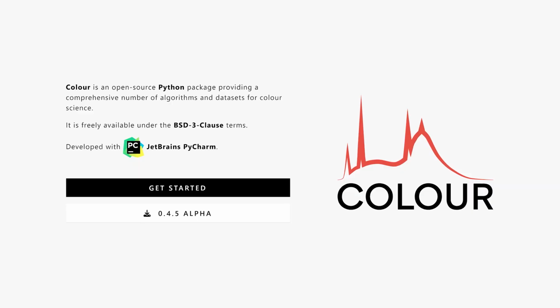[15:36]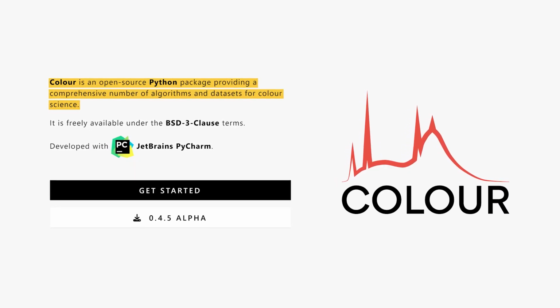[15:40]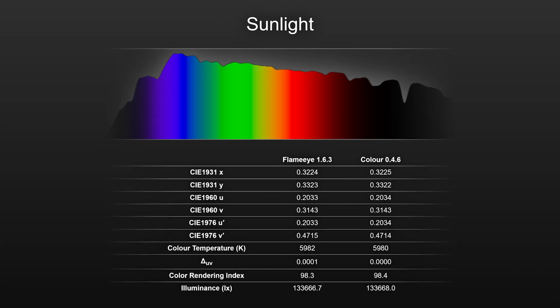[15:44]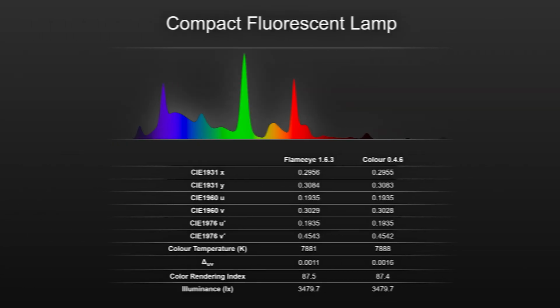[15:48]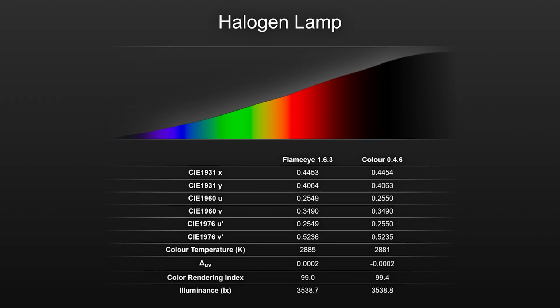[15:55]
Another aspect to test is the algorithms used to calculate various parameters. For that, I'm going to use the excellent color package in Python, which offers a great implementation of many color science algorithms. Examining sunlight, the calculated parameters are virtually identical. This consistency extends to other white light sources, with both the compact fluorescent and halogen lamp showing less than a 1% difference in the parameters I tested.
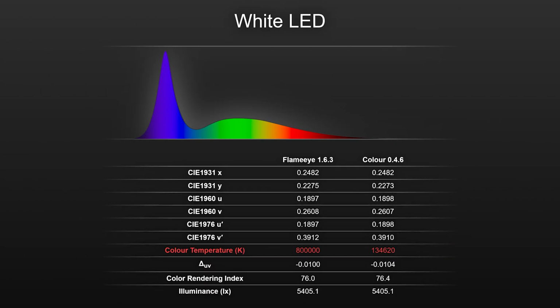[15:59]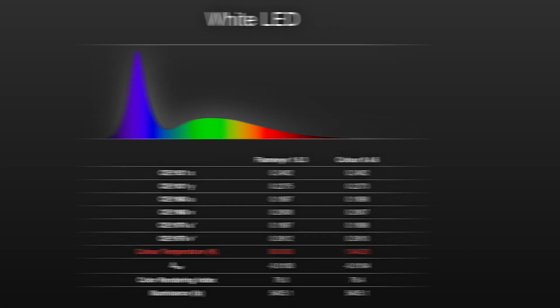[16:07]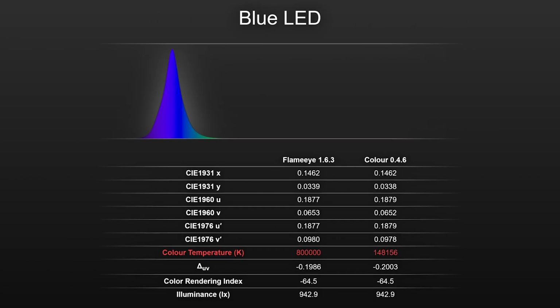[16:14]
The white LED shows a difference in color temperature. The LED's output is close to the point of infinite temperature, which isn't well handled by most algorithms. Similarly, purple and blue LEDs also show color temperature differences, but this is expected as the algorithms aren't designed for these light sources.
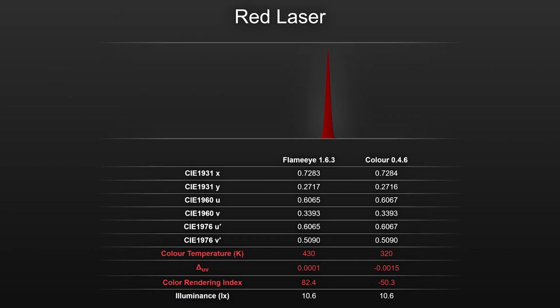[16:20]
Interestingly, FlameEye shows a color rendering index of over 80 for a monochromatic red laser. But to be fair, we shouldn't blame the tool if we're stupid enough to measure the CRI of a laser.
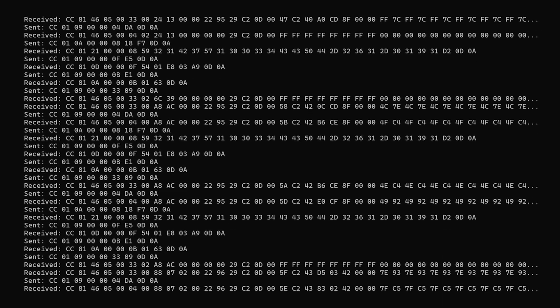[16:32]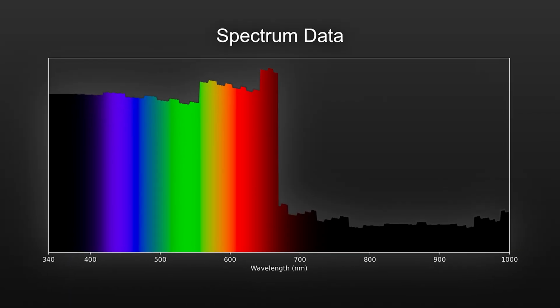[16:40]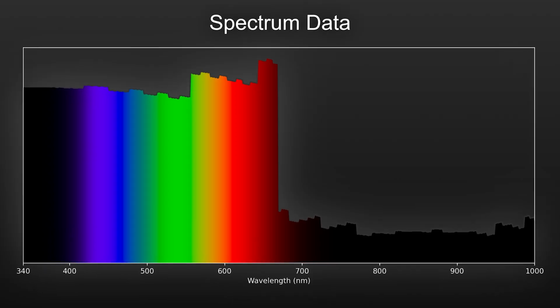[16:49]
It feels like we've got some unfinished business, so let's take a closer look at the serial protocol and see if we can work out how to decrypt it. Examining the raw data, it appears to use an XOR cipher with two keys, one for the first half of the data and another for the second half. These keys seem to change with every measurement.
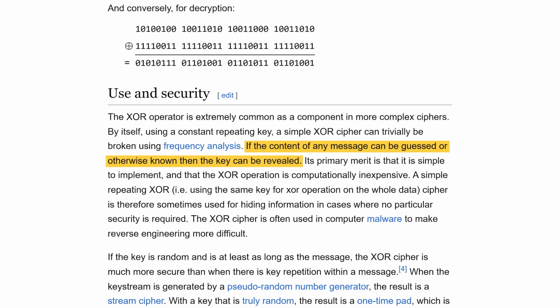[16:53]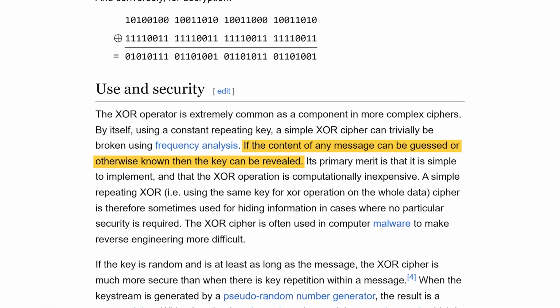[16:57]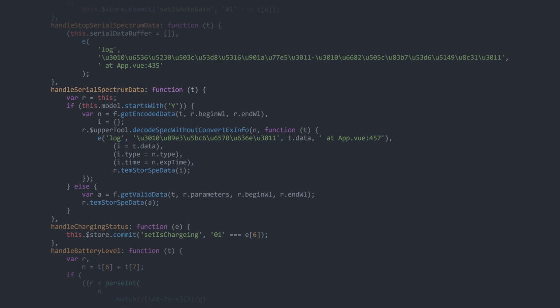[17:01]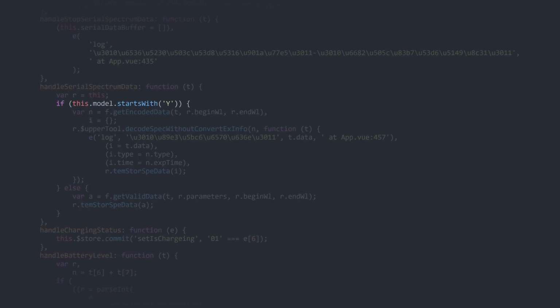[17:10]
While it's sometimes possible to calculate XOR keys by exploiting patterns within the data, if we're going to do this properly, we'll need to understand how the keys are generated. Turning to the app, we can see that when the spectrum data is received, the model number is checked to see if it starts with a Y, which indicates the model uses data encryption. If it does, the serial packet is decoded, then passed to a function responsible for decrypting the spectral data.
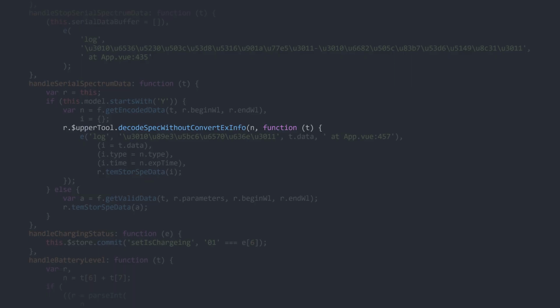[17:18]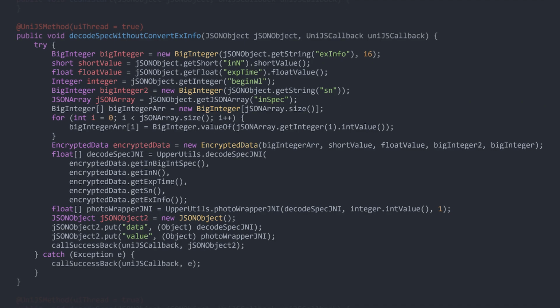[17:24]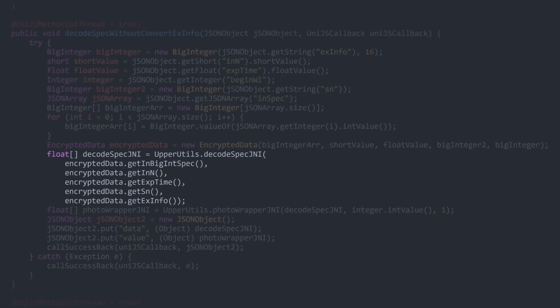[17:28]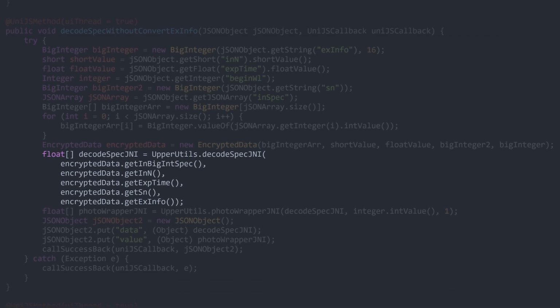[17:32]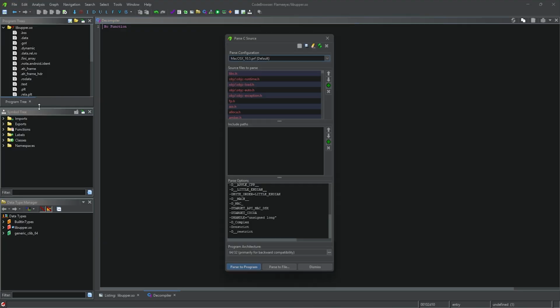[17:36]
Interestingly, this function is written in Java, unlike the rest of the app, which uses JavaScript. Decompiling this function reveals that it passes the data to a native library using the Java native interface. This is likely an attempt to make reverse engineering more difficult. With a little help from our friends at the NSA, we can take a peek inside the library.
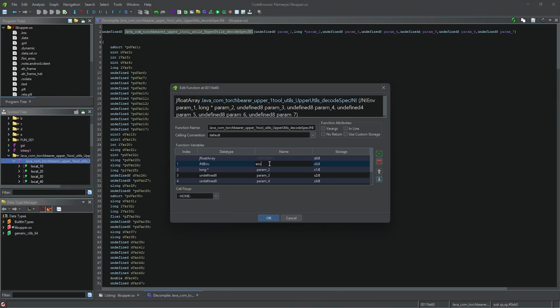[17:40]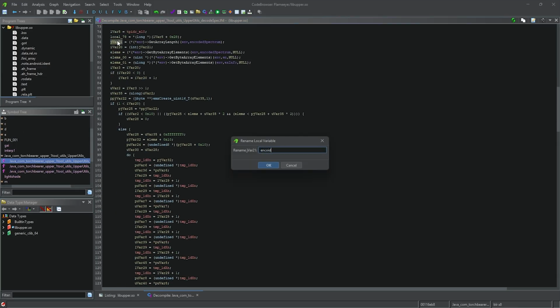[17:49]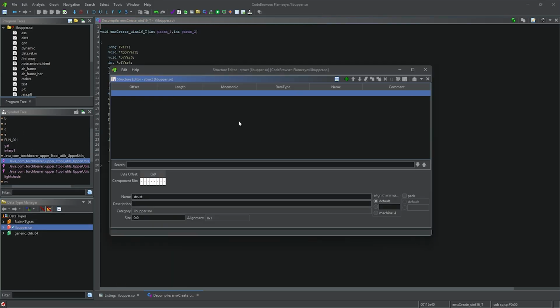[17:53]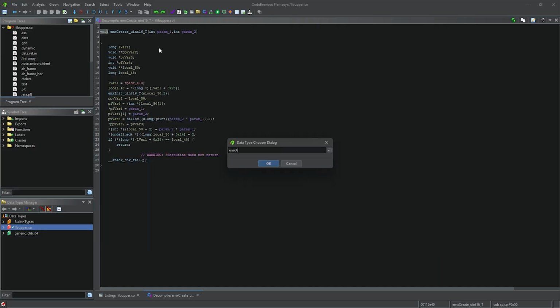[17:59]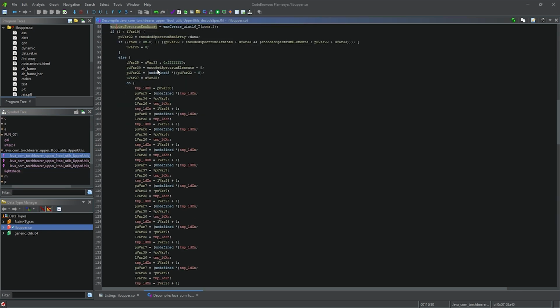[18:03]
The Java native interface specifies the function name, parameters, and return type, which makes it easy to find and annotate the function. The library also appears to use MATLAB-generated components. MATLAB functions and data types are well documented, which provides useful context for assigning names and types to other variables. This is the most time-consuming step, but it makes it significantly easier to understand the library's behaviour.
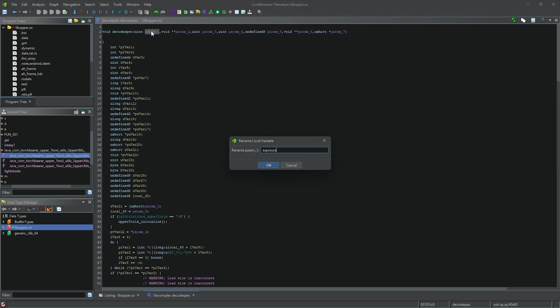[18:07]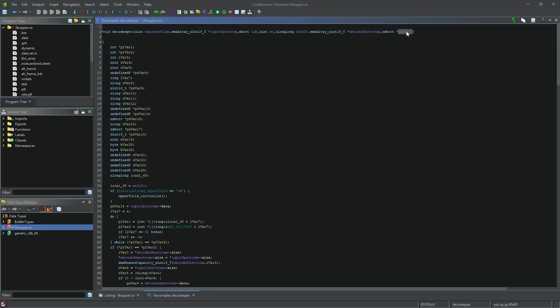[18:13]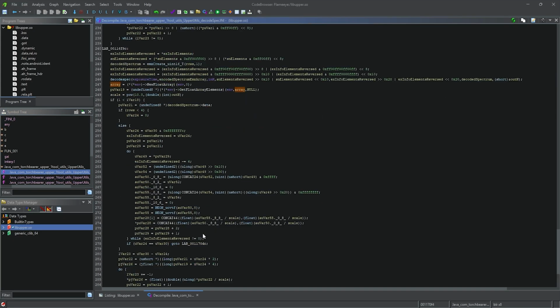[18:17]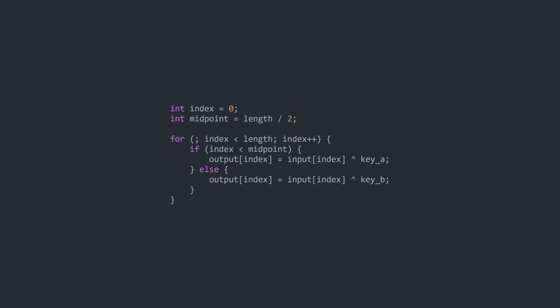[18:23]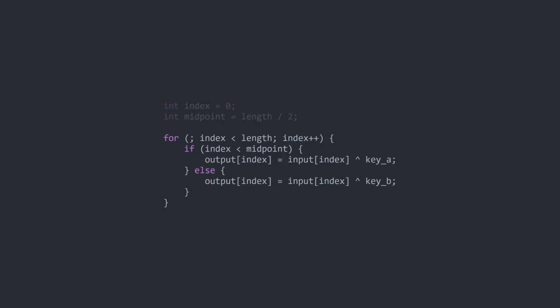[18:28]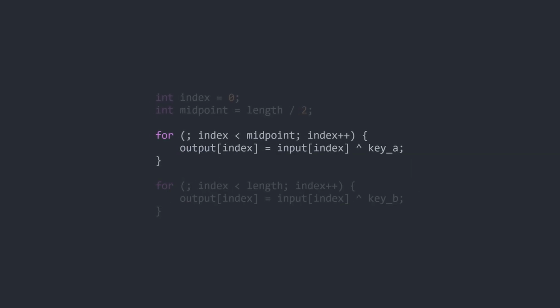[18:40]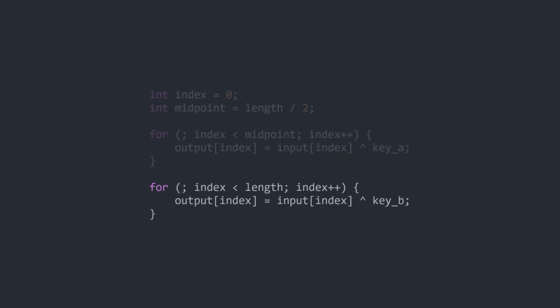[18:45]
With some of the variables annotated, it's a good time to work out what we're looking for. A loop will be used to apply the XOR operation, with one key being used for the first half and another for the second. A common optimization is to split a single loop into two separate loops, one handling the first half of the data with the first key and the other processing the second half with the second key. This avoids performing an extra comparison for every iteration.
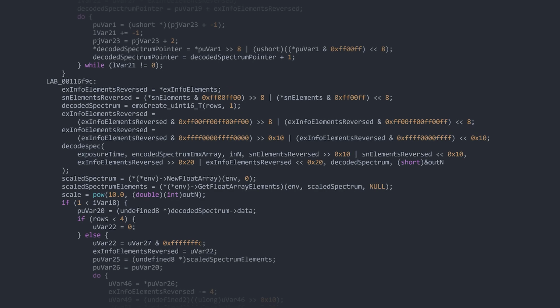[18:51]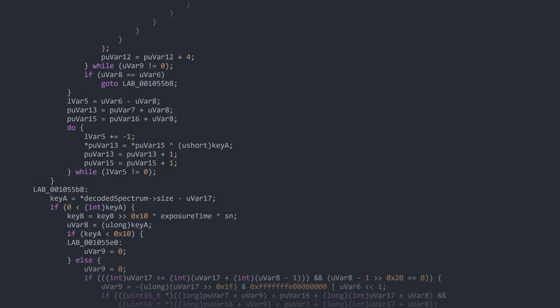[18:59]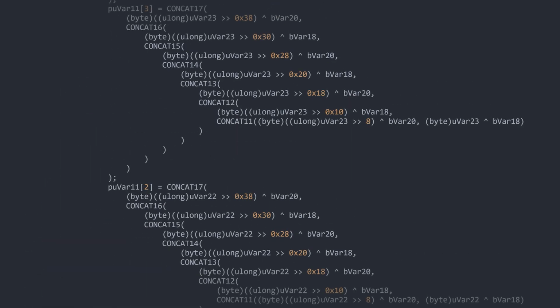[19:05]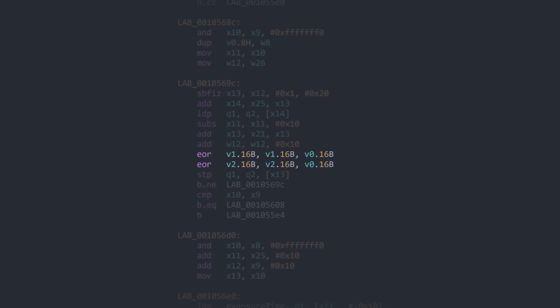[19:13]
None of the loops in this function match what we're looking for, but there's a call to a function named decodeSpec, which sounds promising. Within decodeSpec, I can immediately see two loops that look like the exact sort of thing we're after. But what's all this other junk? Well, this is a case where the decompiler is making things more complicated than necessary. Switching to the assembly view, we find it corresponds to a couple of SIMD instructions.
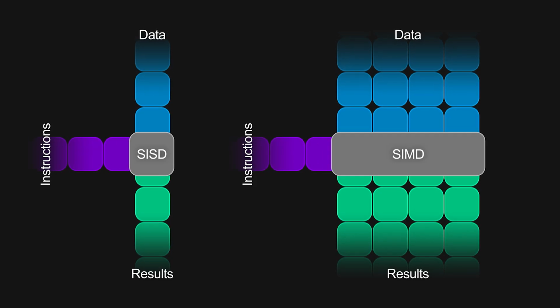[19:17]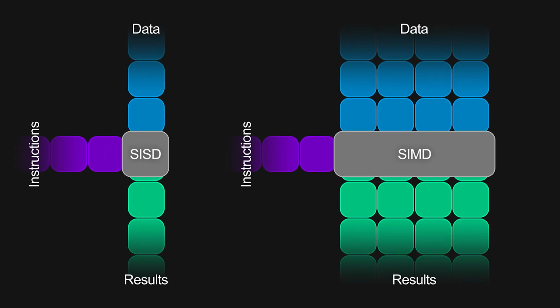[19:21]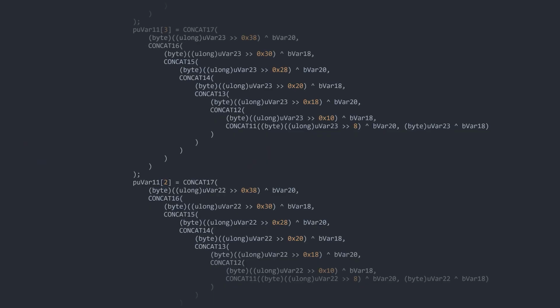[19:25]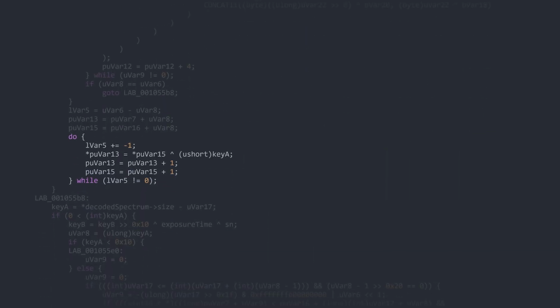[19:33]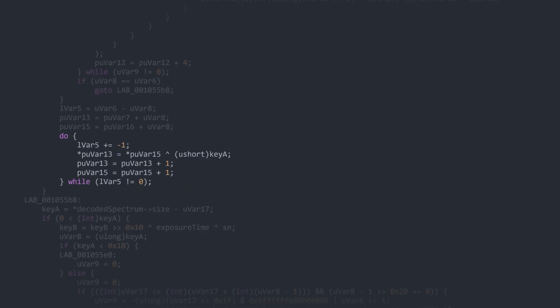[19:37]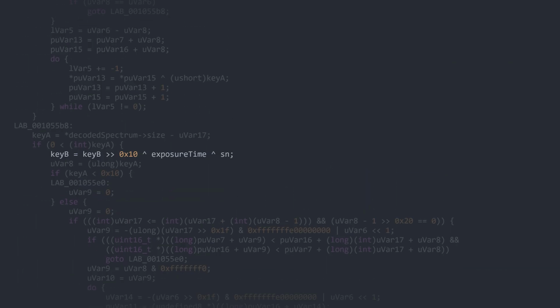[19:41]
SIMD, or Single Instruction Multiple Data, is a way to accelerate repetitive operations by processing multiple data points simultaneously. In this case, each loop iteration performs an XOR operation on 16 values at a time. Since the number of data points might not be a multiple of 16, there's another loop to take care of any remaining data.
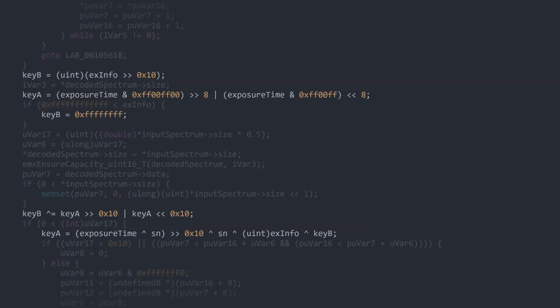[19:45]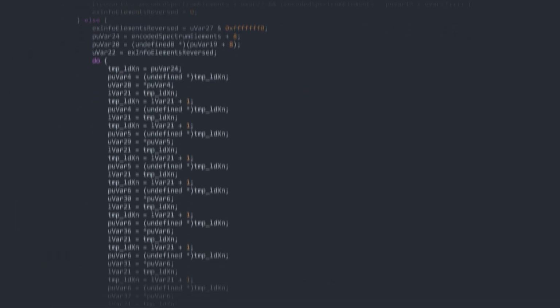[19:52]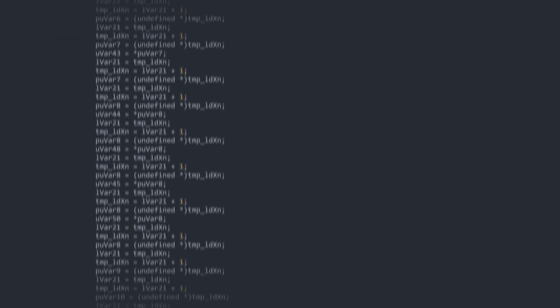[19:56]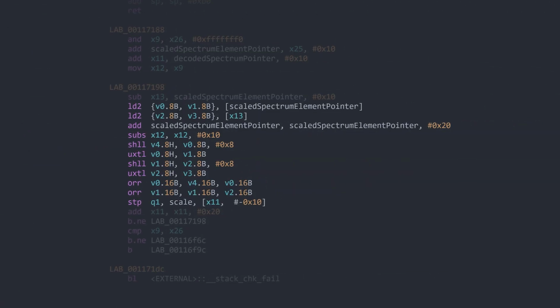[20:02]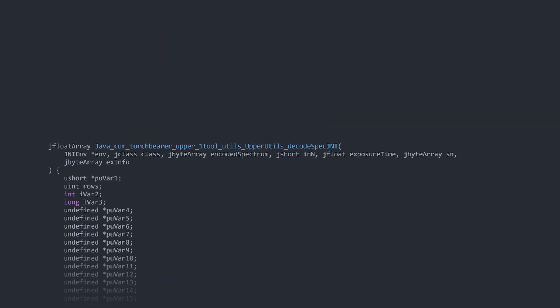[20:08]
Now that we've identified where the keys are used, we can backtrack to find out how they're calculated. Compilers will often reuse memory for multiple purposes, which can make the resulting code tricky to follow. It seems like a lot is happening before the decodeSpec function is called, but once again, the assembly view provides a clearer picture. Over 100 lines of C correspond to just a handful of assembly instructions, which are mostly responsible for formatting and reordering data. We're getting close, but there's one final step.
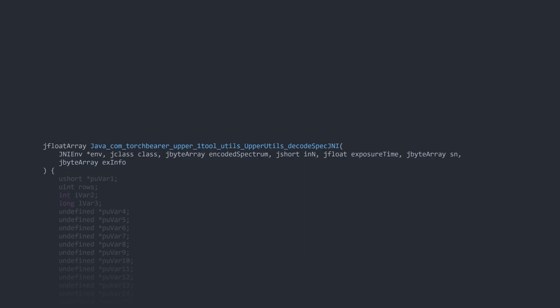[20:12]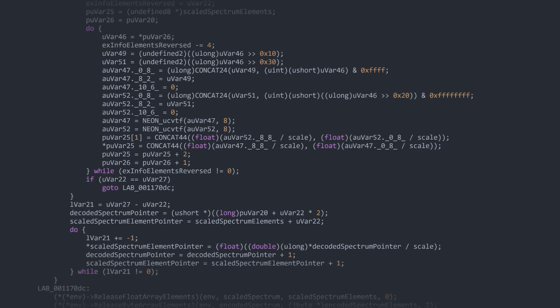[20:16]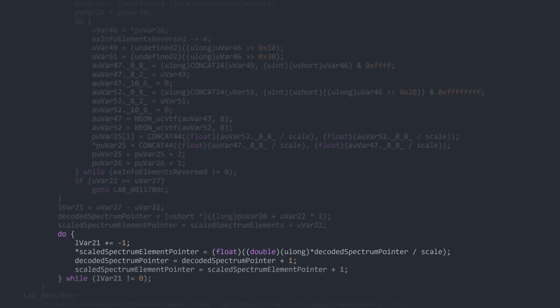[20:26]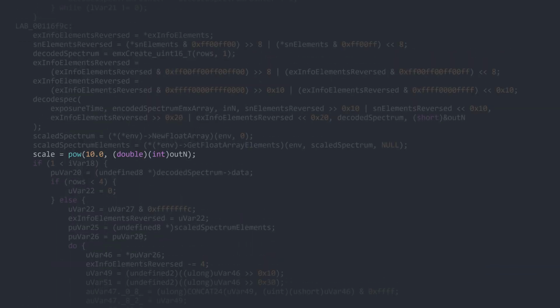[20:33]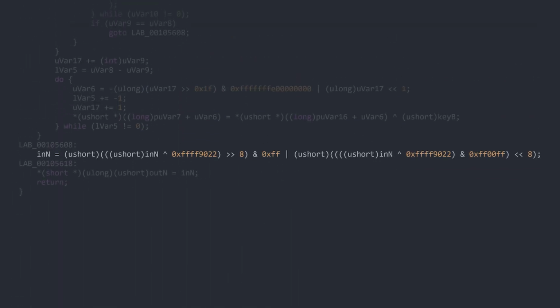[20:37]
The function returns spectral data in floating point format, but after decryption, it's still in integer form. Following the decrypted data, we again find two loops, a SIMD implementation for bulk processing and a standard implementation for any remaining data. Each data point is divided by a scale factor, which is calculated by raising 10 to the power of an exponent. This exponent is encrypted with an XOR operation, but this time, a fixed key is used.
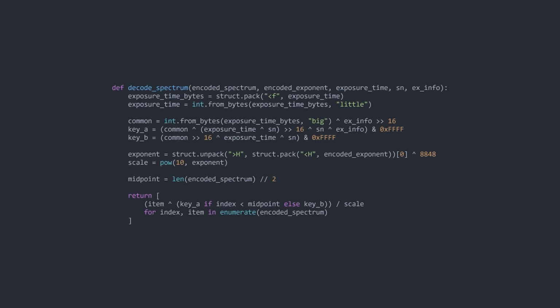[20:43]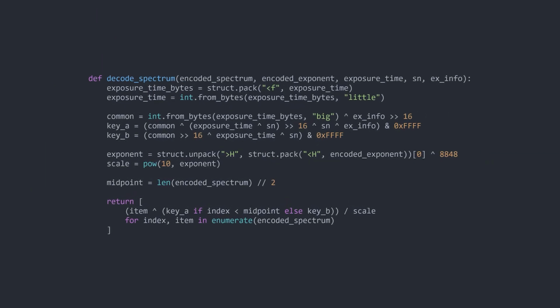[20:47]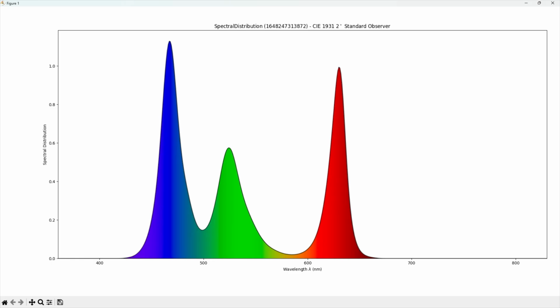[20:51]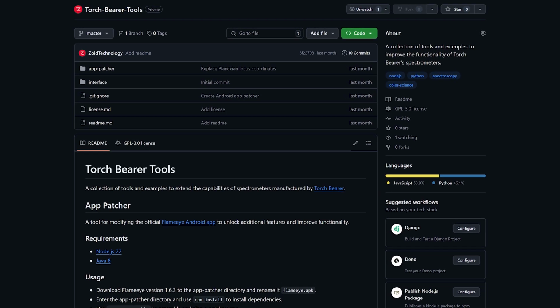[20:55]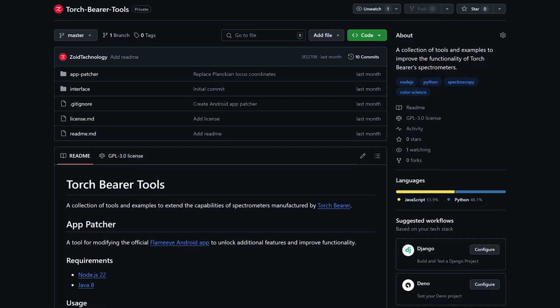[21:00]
Now that we understand how the data is decrypted and scaled, we can write a decoder in Python. This finally allows us to extract spectral data without relying on the supplied software. I've released all the software in this video under the GPL license. You can find a link in the description below.
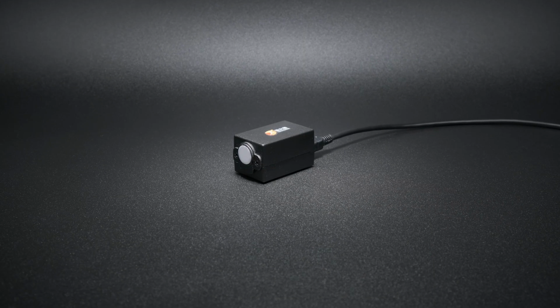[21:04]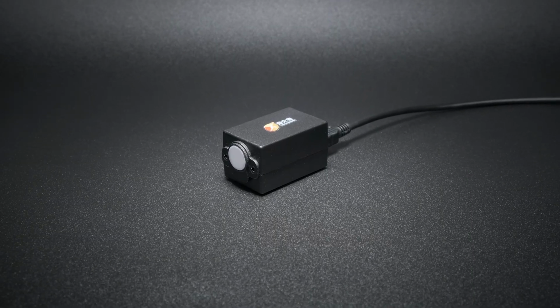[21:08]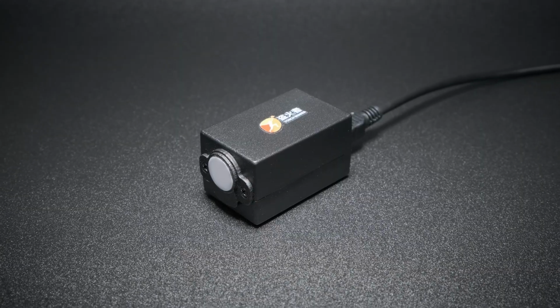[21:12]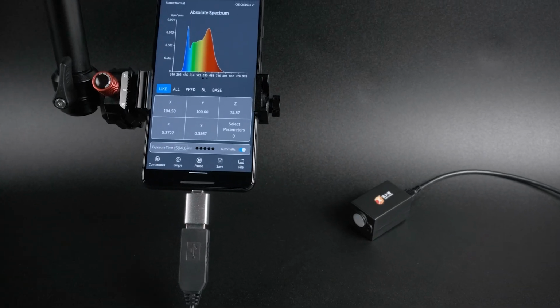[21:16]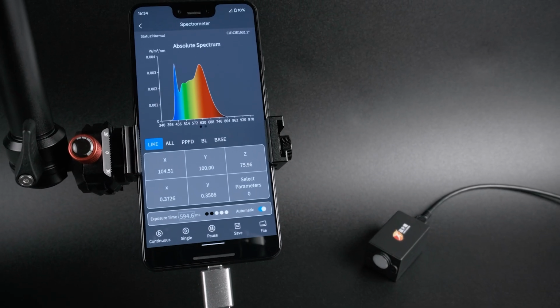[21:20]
For its price, Torchbearer has managed to deliver an impressive spectrometer. Its compact design and extended infrared coverage set it apart from more expensive alternatives. However, it isn't without drawbacks. The software is frustratingly limited, the protocol is encrypted, and the UV performance doesn't seem to match its specifications. So, is it worth buying?
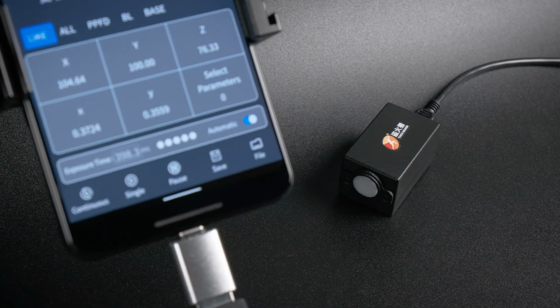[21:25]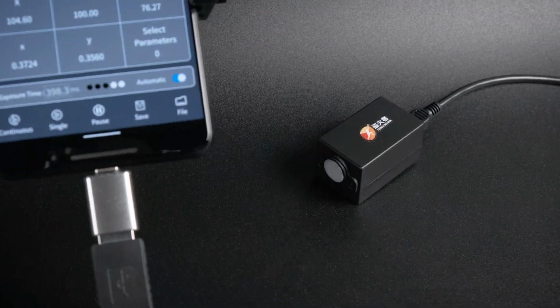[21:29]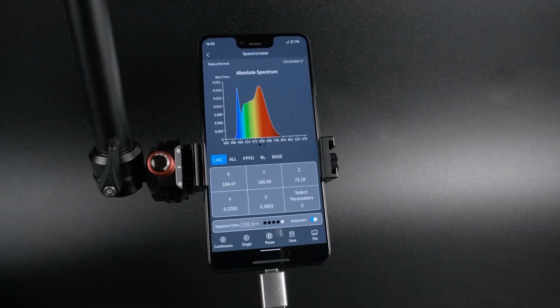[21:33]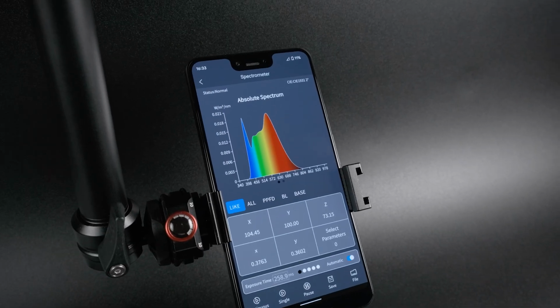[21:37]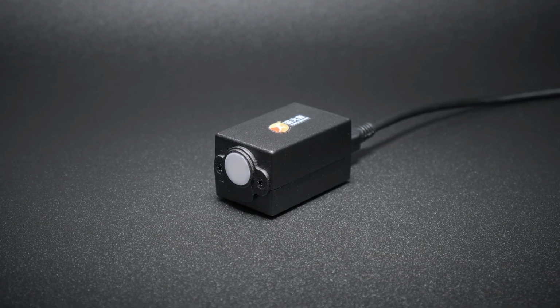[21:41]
If you're after an affordable spectrometer for basic measurements and can overlook its limitations, then it could be an excellent option. If you've got an Android device and don't mind tinkering with the app, then you can turn it into an extremely powerful tool. But keep in mind, there's no guarantee that the manufacturer won't change their encryption methods in the future, requiring another round of reverse engineering.